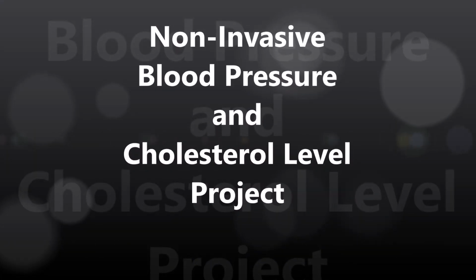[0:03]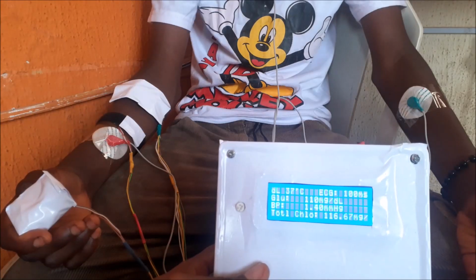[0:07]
Hello there, welcome to another episode where we try to build a non-invasive blood pressure and cholesterol measurement using Arduino and Node MCU development boards. We will build this project.
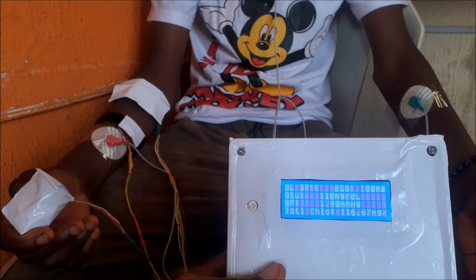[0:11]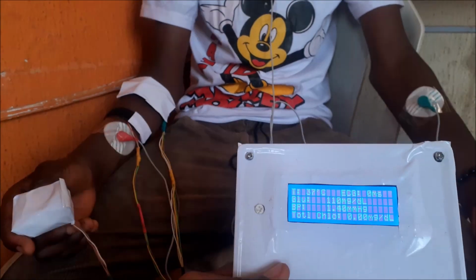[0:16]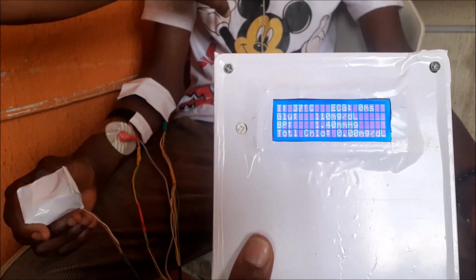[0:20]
This project monitors essential vitals like glucose level, blood pressure level, body temperature, ECG levels, pulse rate and cholesterol levels in the body. All of these are displayed on a smart screen like the 20x4 LCD screen shown here.
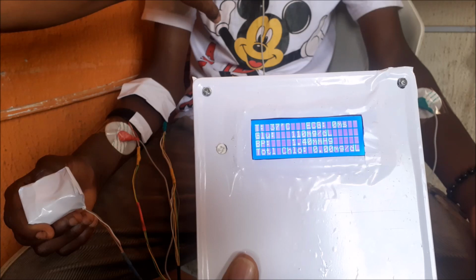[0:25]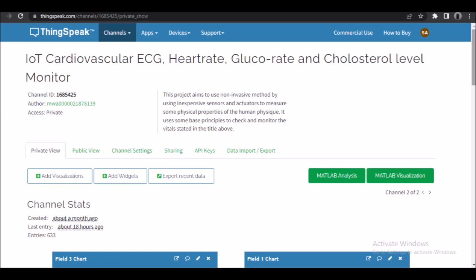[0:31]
We will also be making the project Internet of Things based, where we will not only be able to see it on a dashboard but we can further analyze it and have a health professional remotely monitor and predict the health outcome of the patient. This remote IoT dashboard will be the ThingSpeak IoT dashboard.
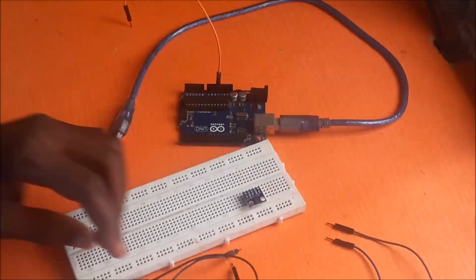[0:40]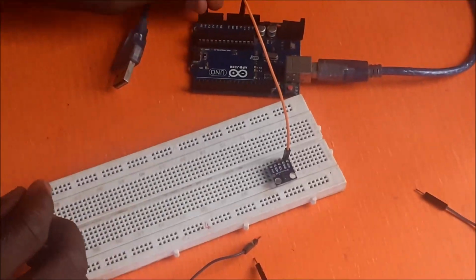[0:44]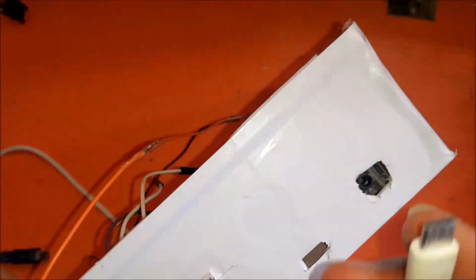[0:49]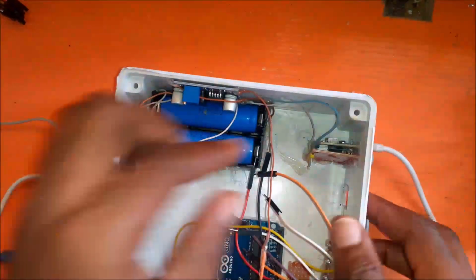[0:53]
In this tutorial we will go from the circuit diagram to how we breadboarded the components, down to assembling the components themselves, to programming it, as well as testing it to ensure it is working as we need it to be. So without further ado, let us get into how this was made.
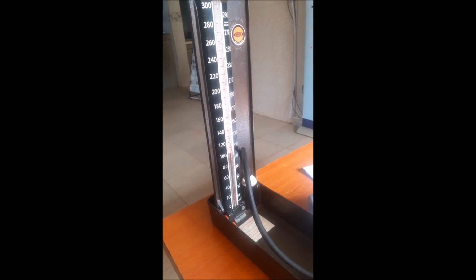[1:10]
Before we begin this design, we will take a route down the traditional way of doing this. We go to the lab to get the specimen's results on these parameters. The blood work of this person would reveal the person's cholesterol level, the glucose level, the blood pressure, the pulse rate and body temperature, as well as the other things we needed in the project design.
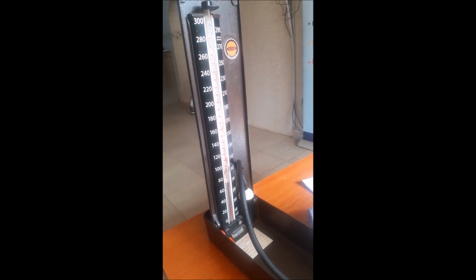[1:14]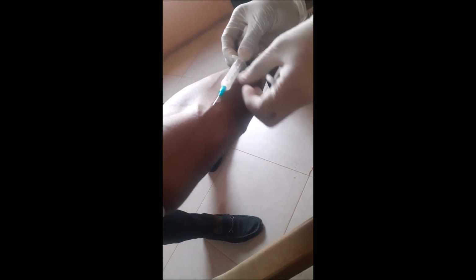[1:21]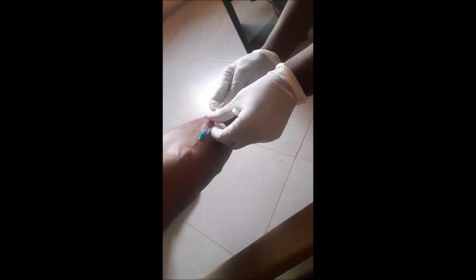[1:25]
This traditional method, which is the invasive method, involves pricking the skin with needles and drawing blood samples. On these samples, various tests will be carried out and we can get the results, and we can use these results to compare with our non-invasive approach.
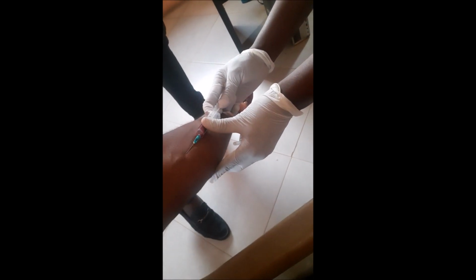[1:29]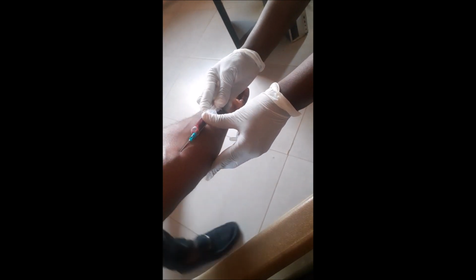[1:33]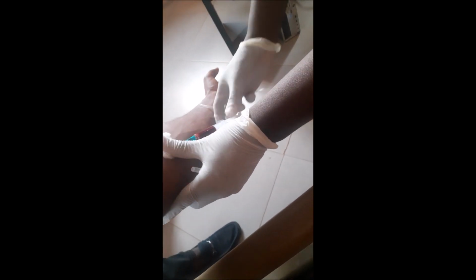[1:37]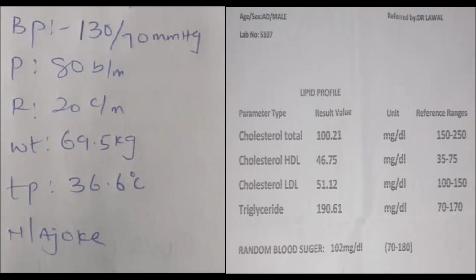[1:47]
The lab work will take some hours for the results to be out, but we will wait until they eventually come out. The process is a bit painful if you are not scared of needles, but it is frightening if you are. Hence why we are experimenting to find a better way, a non-invasive approach to cardiovascular disease detection and prevention. Once we get our results, as written here on this piece of paper, we move on to designing the schematic diagram for the non-invasive technique.
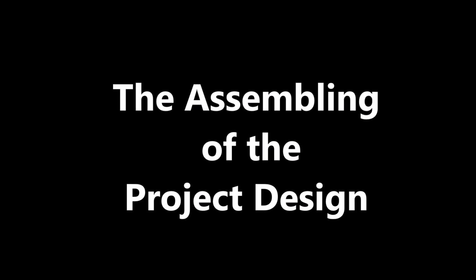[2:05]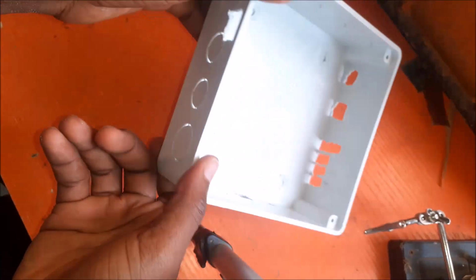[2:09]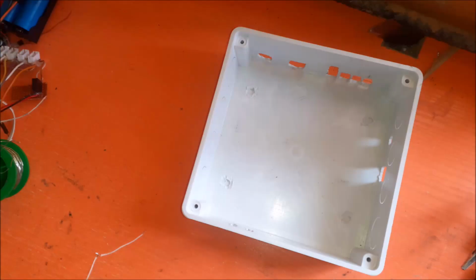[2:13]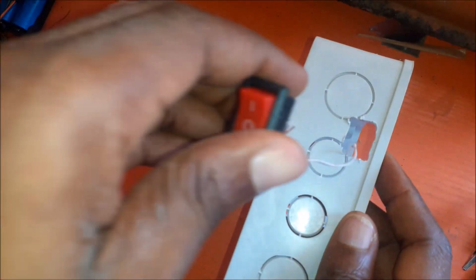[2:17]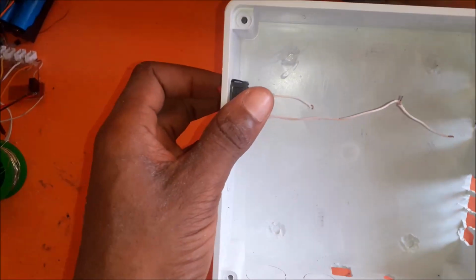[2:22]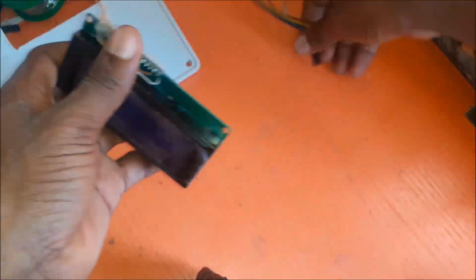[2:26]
Now, let us proceed to assembling the project design according to the circuit diagram. First, we begin with the enclosure and how to mount the components and the modules in it accordingly. Already we have made openings to safely situate these modules in the enclosure. We begin with including the switch for isolating and introducing power to the rest of the components from the backup battery. After this, we mounted the LCD screen carefully under the top cover of the enclosure.
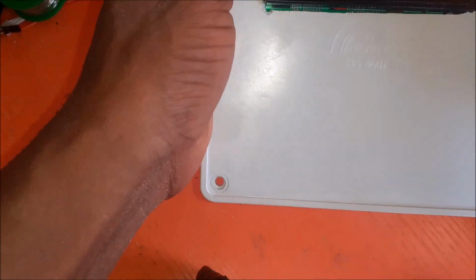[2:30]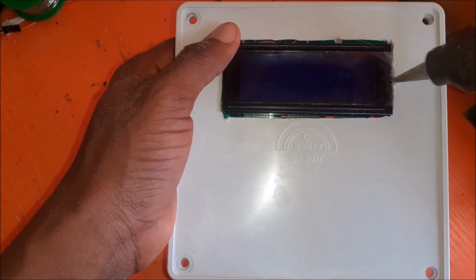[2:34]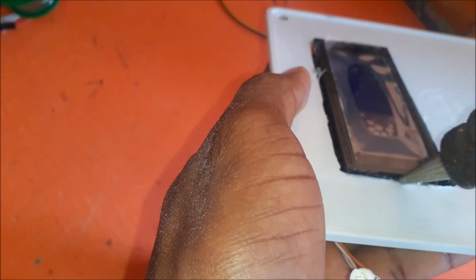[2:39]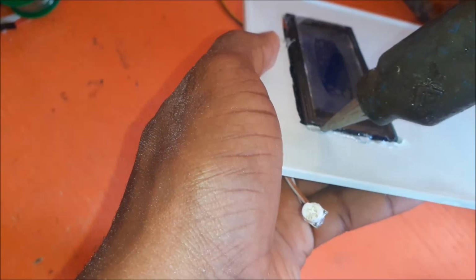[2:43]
Then we used the glue gun to apply some glue on the screen to hold it tightly in place to the enclosure cover. Once this was neatly done, we can proceed to the next thing on our to-do list.
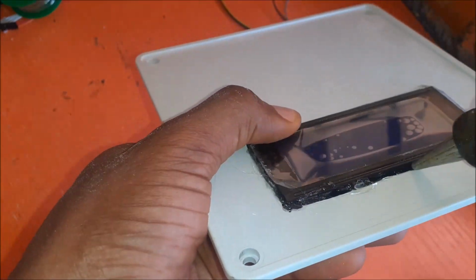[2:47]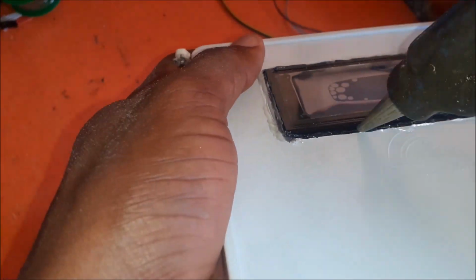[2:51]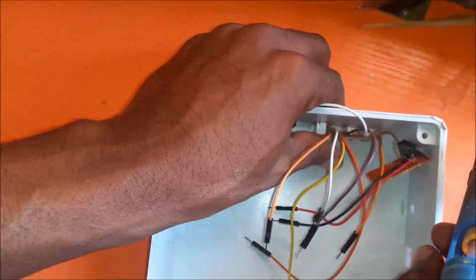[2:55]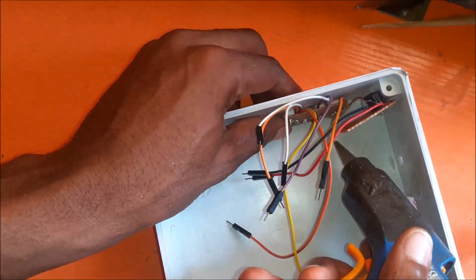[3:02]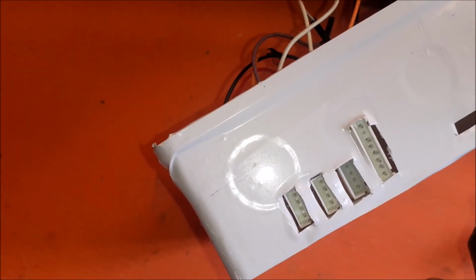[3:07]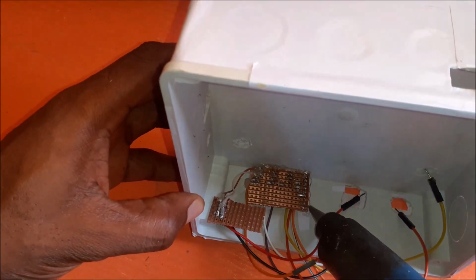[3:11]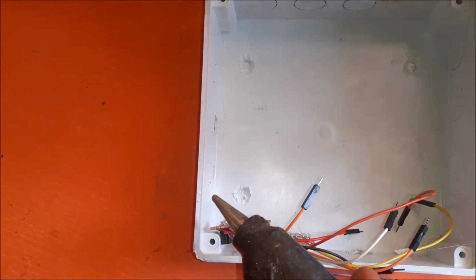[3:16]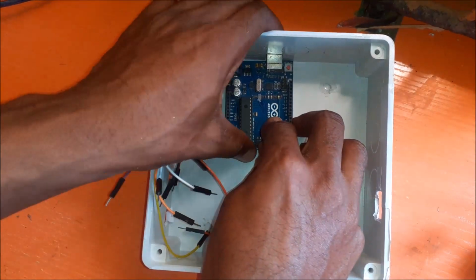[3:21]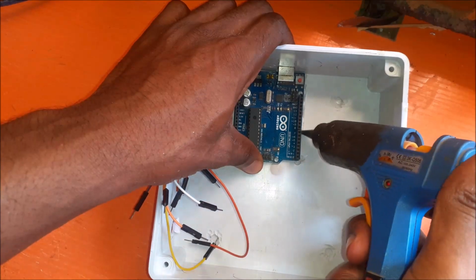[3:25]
The next thing would be to glue the connectors that we will use to connect the sensors to the development board. Since the schematic diagram specified that we used an Arduino Uno board and a Node MCU development board, these 2mm JST male connectors will house the female wire connector when we connect the sensors from outside the project enclosure design. And since these male connectors are soldered onto a Veroboard, we in turn solder a male jumper wire to it, so as to enable us to connect it to the Arduino development board itself. The whole process is for ease and convenience of the wiring and connection as specified by the circuit diagram.
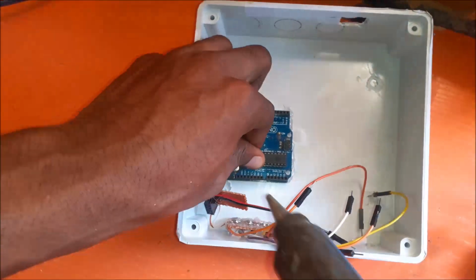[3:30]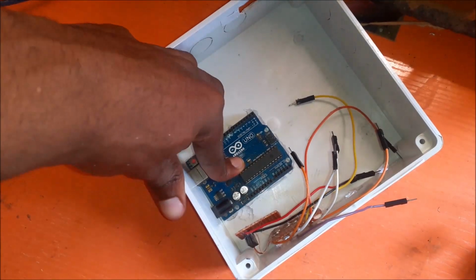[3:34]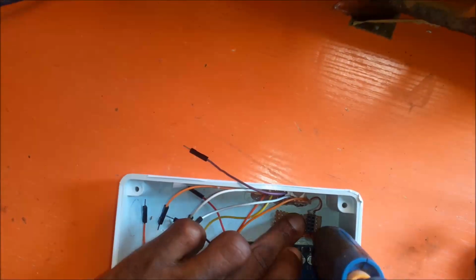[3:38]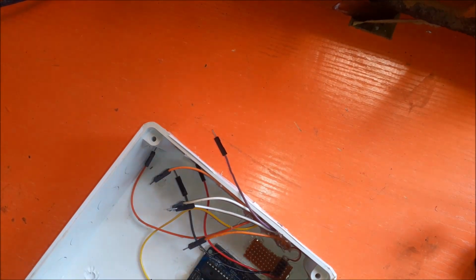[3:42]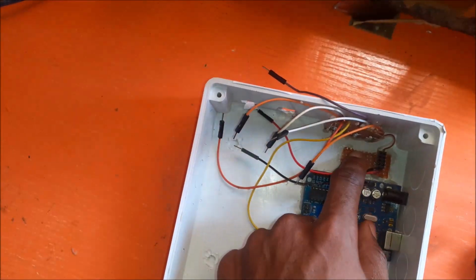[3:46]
Now, we also glued the Arduino Uno board onto the base of the enclosure, but we also cut out an opening for programming the board itself. We have broken the circuit diagram itself into different parts so as to make it very easy to connect them following the circuit diagram. Also, to make it easy to troubleshoot the design for any hardware errors or misbehavior when programming or testing it,
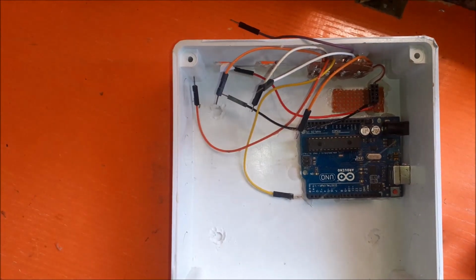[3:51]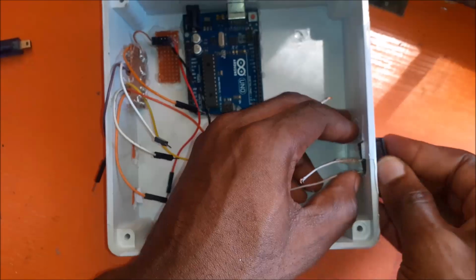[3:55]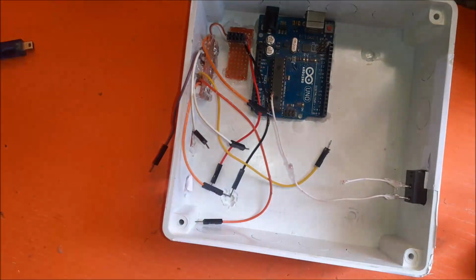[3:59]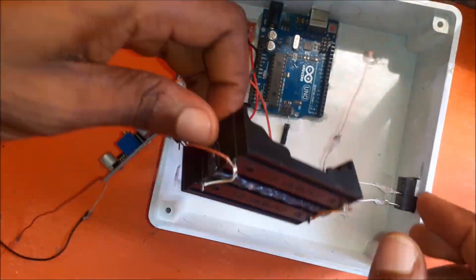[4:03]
we used a pair of lithium-ion rechargeable batteries which are rated 3.7 volts, 3.8 Ah, to power this project. They also act as a backup power source when the design is not powered directly from an external power source. These LiPo battery holders will house the LiPo batteries themselves.
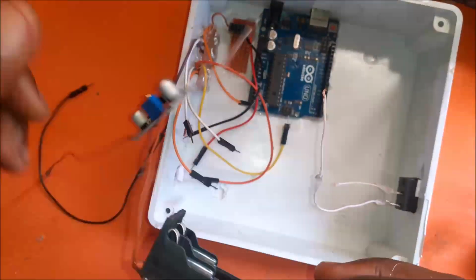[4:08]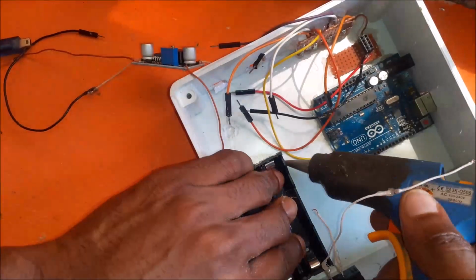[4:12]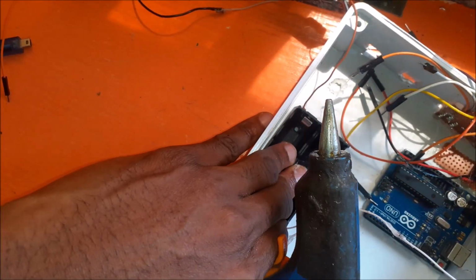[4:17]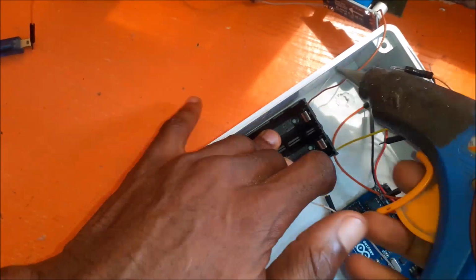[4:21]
Carefully apply glue to the battery holder base to firmly hold it to the base of the enclosure. Then proceed to glue it further to ensure it is strong and doesn't move when it is vibrated by mistake or intentionally. Once you are done with this, you can let the hot glue cool off and form a firm bond to ensure it is strong and firm.
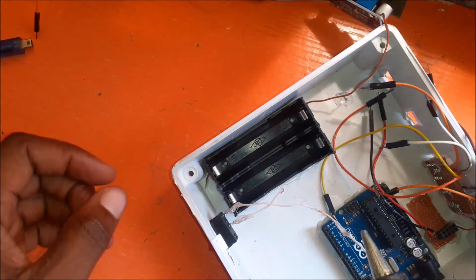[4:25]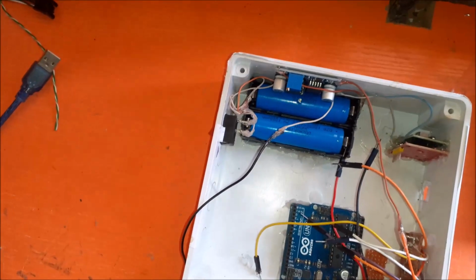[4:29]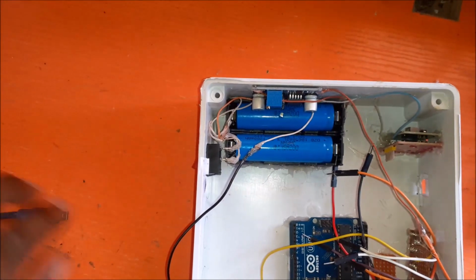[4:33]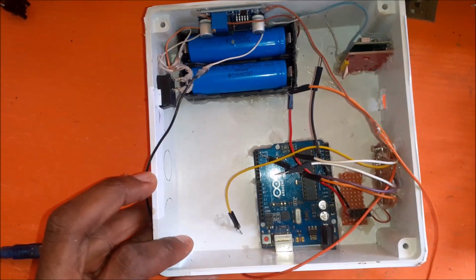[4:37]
Since the Arduino Uno board and the NodeMCU board need 5 volts to work, we connected the LiPo batteries in series and used a DC-DC buck converter to step the output voltage down to 5 volts, so that it will be at a suitable voltage level for the development boards.
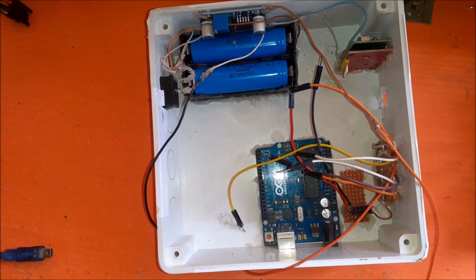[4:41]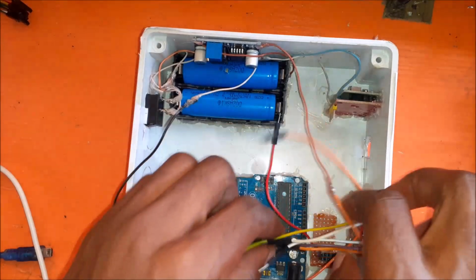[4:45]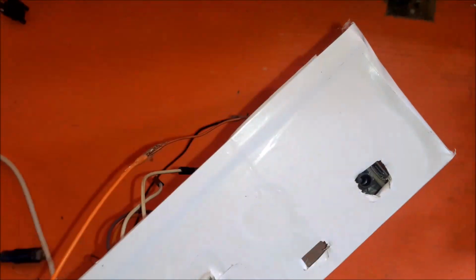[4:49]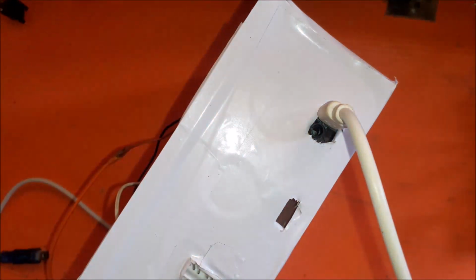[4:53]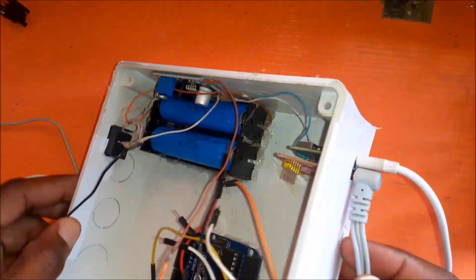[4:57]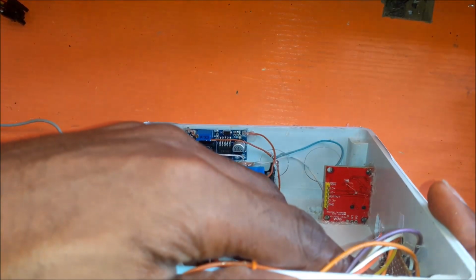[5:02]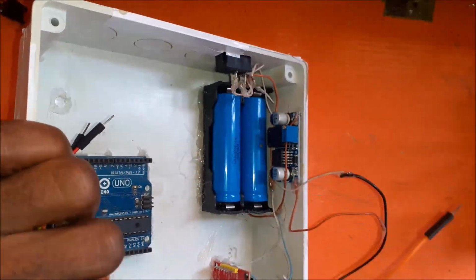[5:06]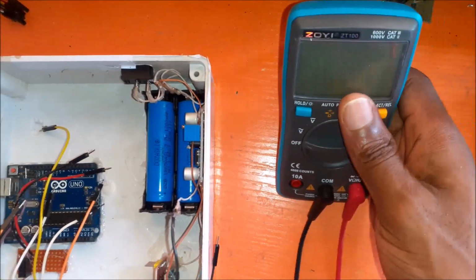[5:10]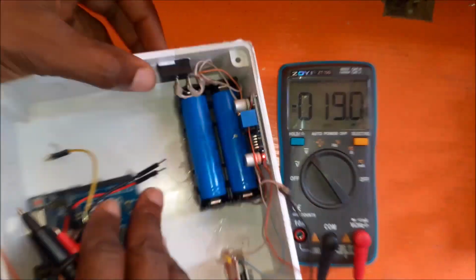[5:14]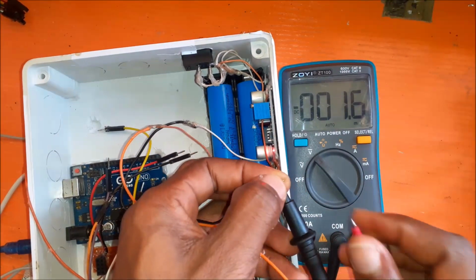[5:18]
Now we can proceed to regulate the output voltage for the modules and components connected in the design. Using a digital multimeter set to voltage measurement, we can turn the knob of the onboard buck converter until it outputs 5 volts DC. This 5 volts would then be paralleled across all the modules that are connected in the circuit diagram.
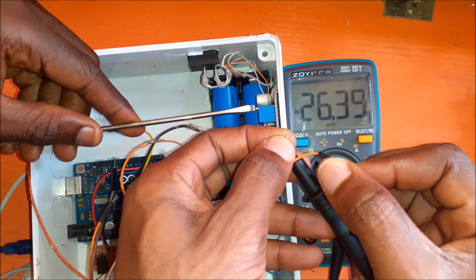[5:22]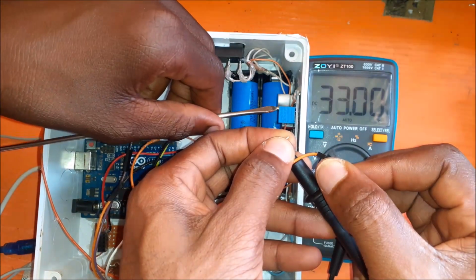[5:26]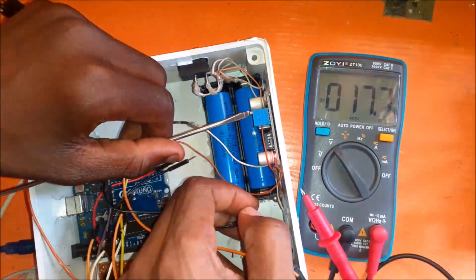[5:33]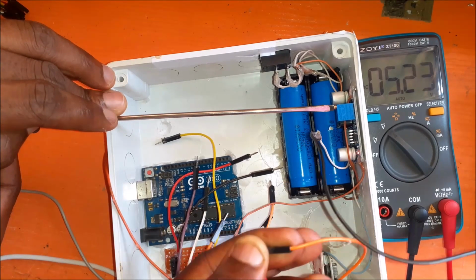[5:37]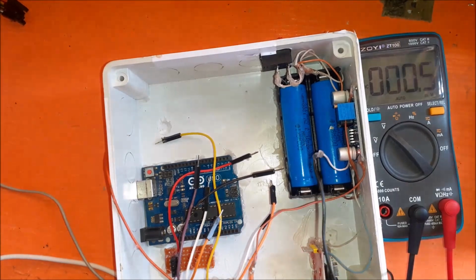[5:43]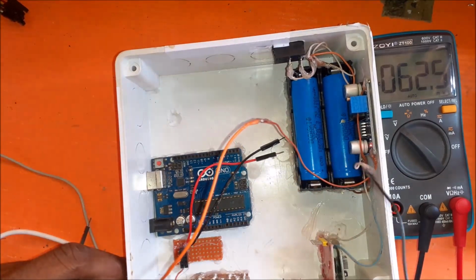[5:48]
Since this is the logic level all of them are using, except for the ECG sensor module whose comparator board uses a logic voltage of 3.3 volts. We can source the 3.3 volts level from the Arduino Uno board, since it has an onboard regulator that can give us this output. We made a multiple output channel for this 5 volts logic using female header pins soldered onto the Vero board, where the modules and development board can be connected to get the 5 volts logic levels.
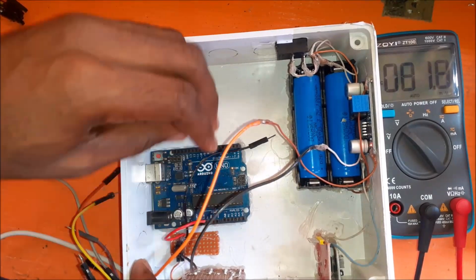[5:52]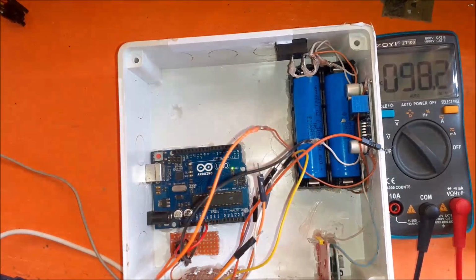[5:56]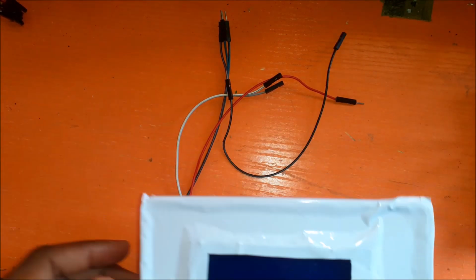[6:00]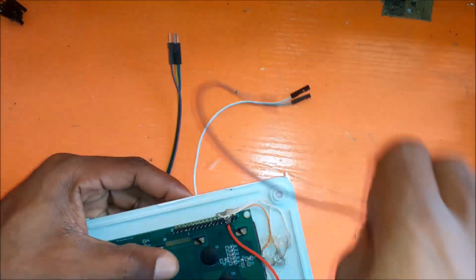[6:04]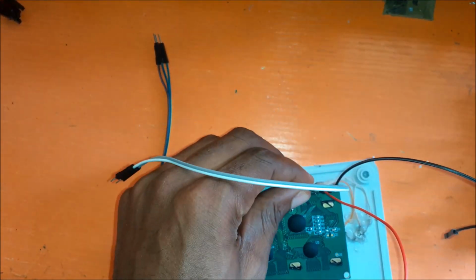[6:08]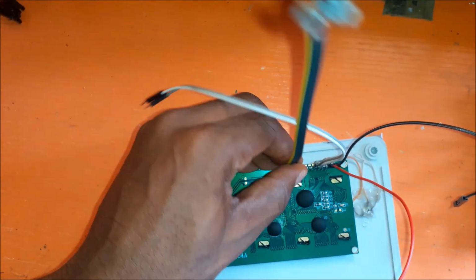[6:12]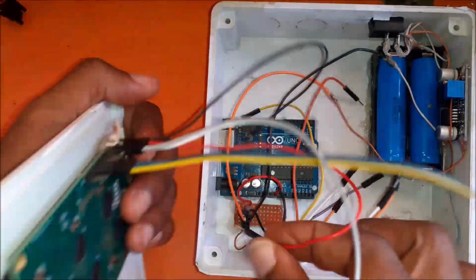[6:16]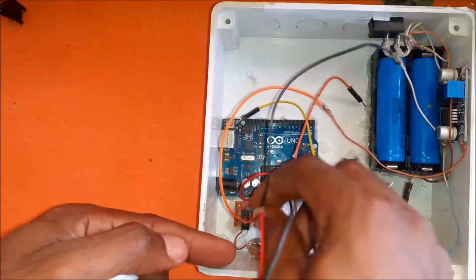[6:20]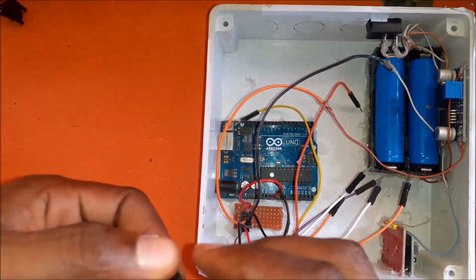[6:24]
Next we move to the connection of the LCD module. Since we are using a 4-bit method, we connected the LCD according to the schematic diagram. This means connecting the module to the Arduino Uno using male jumper wires. We connected the power rails first, then the register select wire and the enable pin wire to the Uno board, then the 4 data wires from the Uno board to the LCD module.
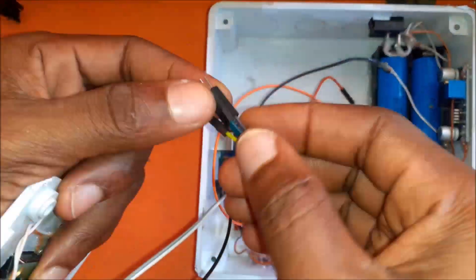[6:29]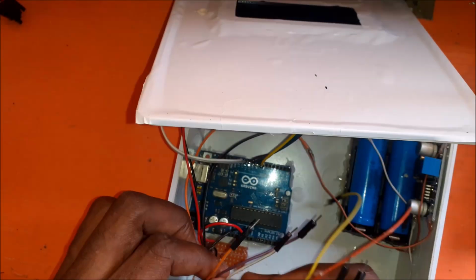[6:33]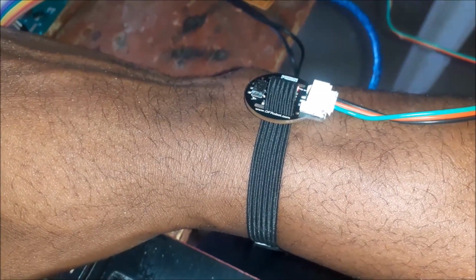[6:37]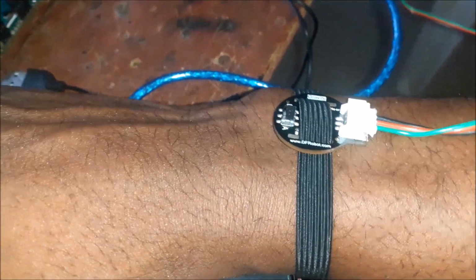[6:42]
Once we are done with the LCD connection, we move to connecting the other modules and ensure all the wiring is done accordingly, like ensuring that this pulse sensor module shown here is properly connected and is also working. Enough about component assembly, let us move to programming the project design.
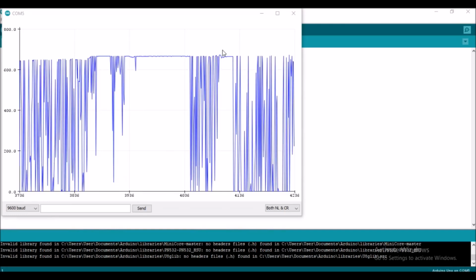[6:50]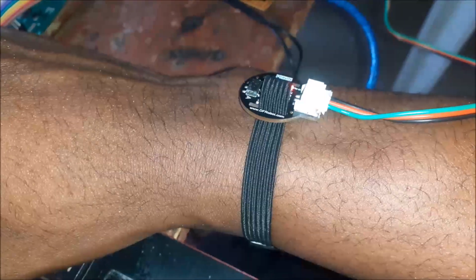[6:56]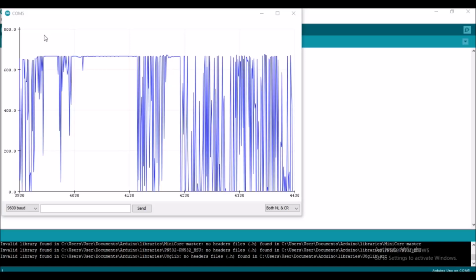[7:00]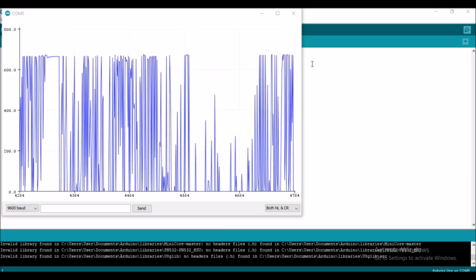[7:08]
Download a copy of the project Arduino source code from the description link below. Once you run the code, your serial plotter would be able to show you the ECG readings just as the one shown here. Also, when testing the pulse sensor and you open the serial plotter on the Arduino IDE, you can see the measurement taken as it is being plotted. Now we can really see what the pulse sensor is giving us graphically.
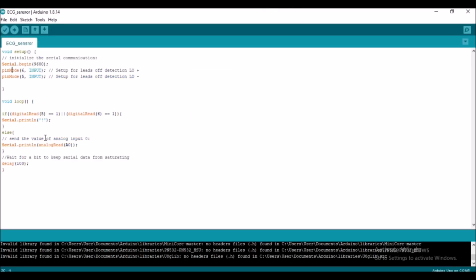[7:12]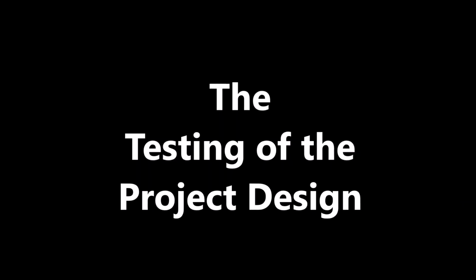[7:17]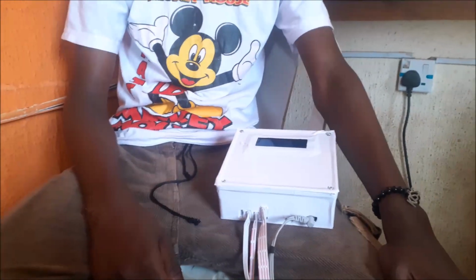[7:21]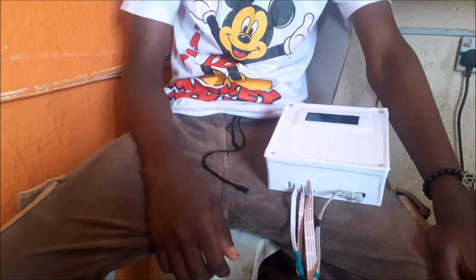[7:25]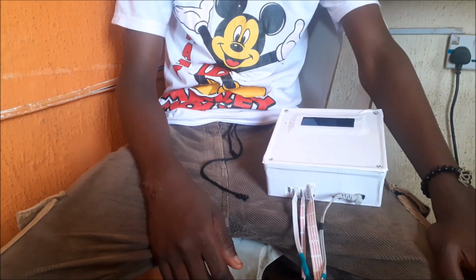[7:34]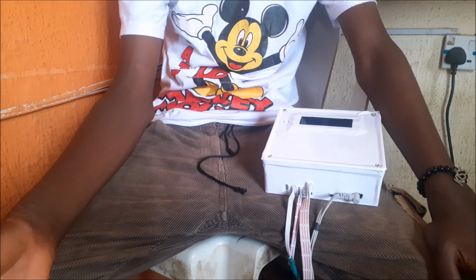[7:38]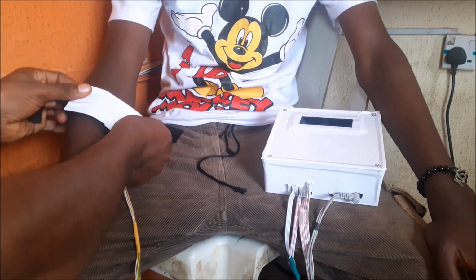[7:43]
Once we are done running the various codes needed for the vascular disease detection and prevention project design, we can proceed to actually testing out the project design to see if it confirms the results obtained from the laboratory blood work. We picked the same person that was used to obtain the lab results. This was very essential during the testing phase of the project itself. We connected all the sensors needed for the test to their respective ports. Once this is done, we are ready to carry out our non-invasive tests.
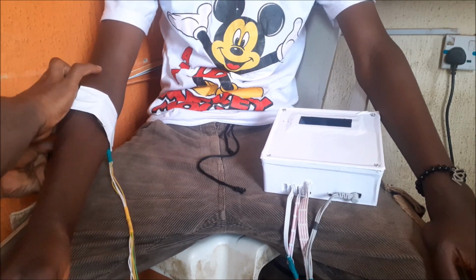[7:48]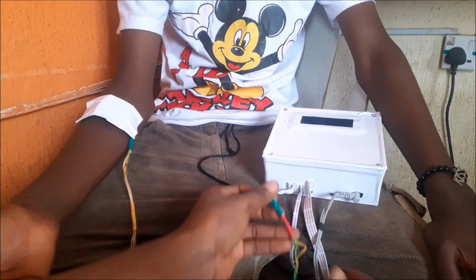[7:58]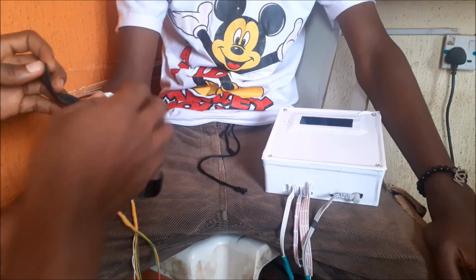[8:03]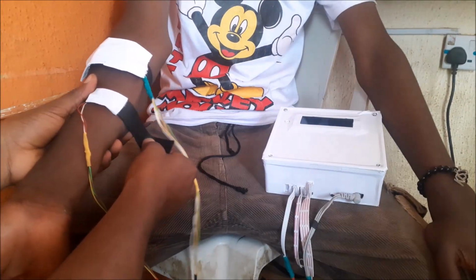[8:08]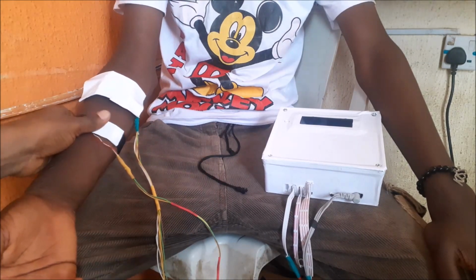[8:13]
Some of the sensors were custom made according to the schematic diagram, and we attached them to a Velcro fastener to ensure we measure as closely as possible the reading we are looking for. Starting with the pulse sensor module, we attached it to the arm. The temperature sensor used to measure the body temperature was attached next. We were going for a waterproof temperature sensor using the Dallas DS18B20 sensor. We found out that the ordinary type works better as well.
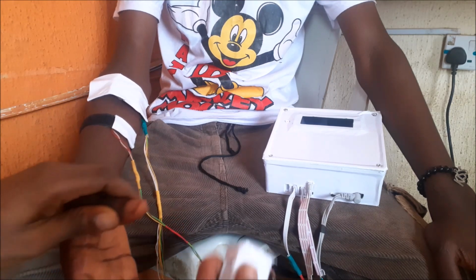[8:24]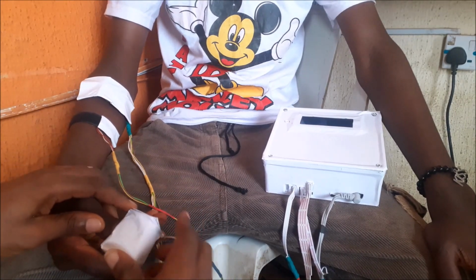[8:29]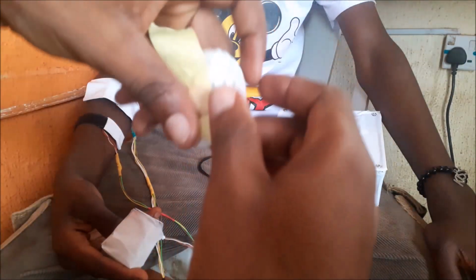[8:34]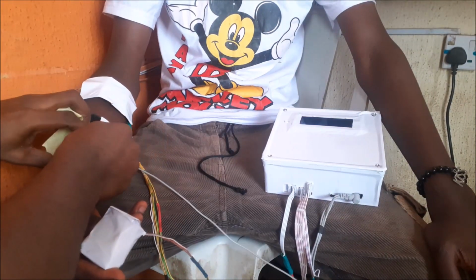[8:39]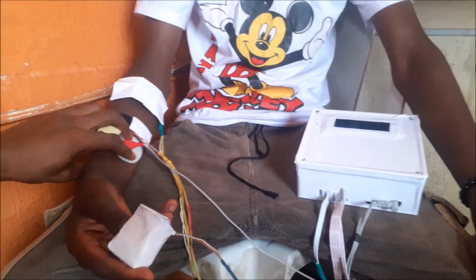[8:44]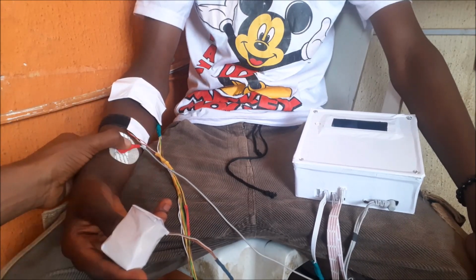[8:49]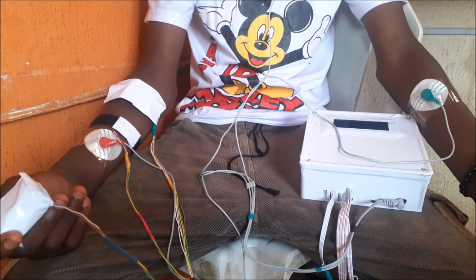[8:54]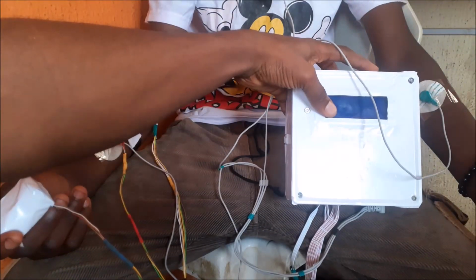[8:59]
The cholesterol sensor module, which was custom made using the Beer-Lambert principle, was attached to the thumb and ensured it was firm and strong. Next is the ECG sensor. This has 3 sensor leads, and we place them accordingly in the positions on the body. These positions are to ensure accuracy of the sensor itself. Once these body sensor attachments were completed, we can proceed to powering on the device itself.
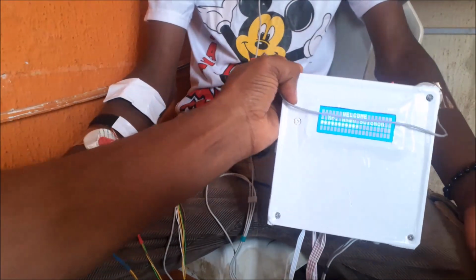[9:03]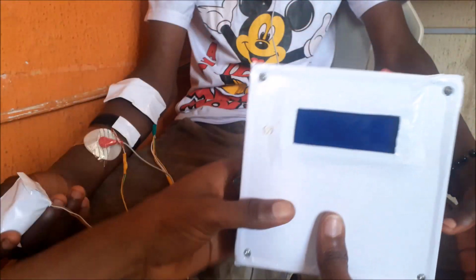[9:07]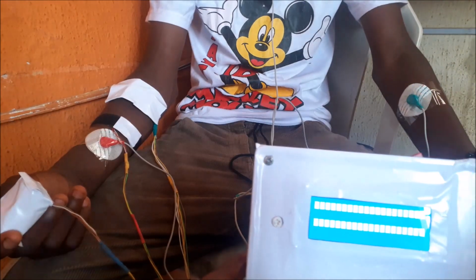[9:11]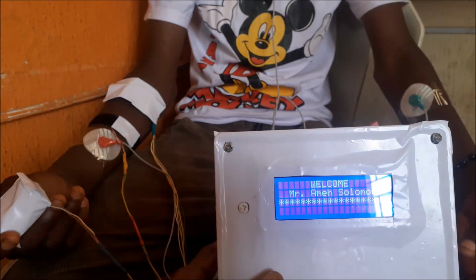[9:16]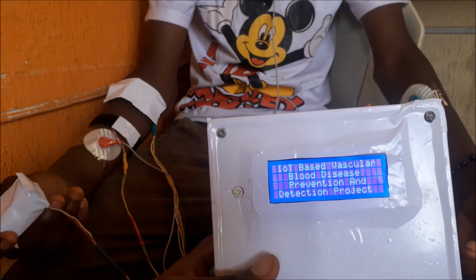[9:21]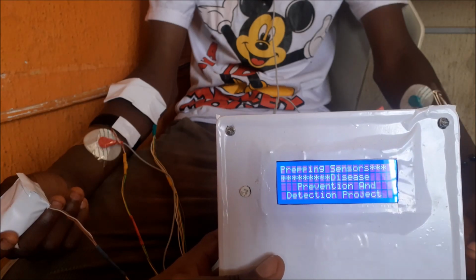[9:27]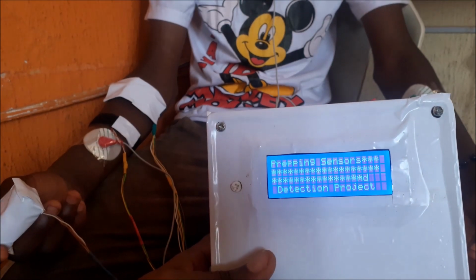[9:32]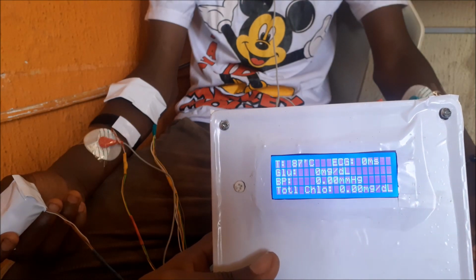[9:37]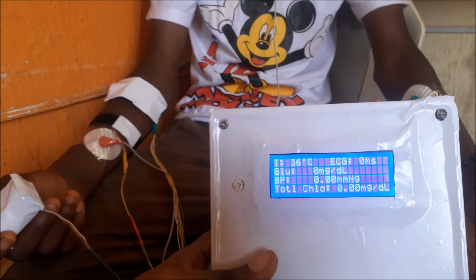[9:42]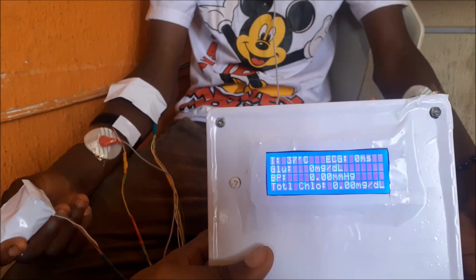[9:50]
On turning on the device, we are greeted with a welcome message, after which the screen clears and some time is taken for the microcontroller to ready the sensors. Once the sensors are ready, we can begin taking measurements, and we can see each sensor reading on the LCD screen. Each line has what it is measuring, and it is clearly stated there.
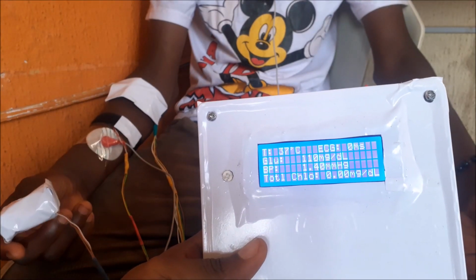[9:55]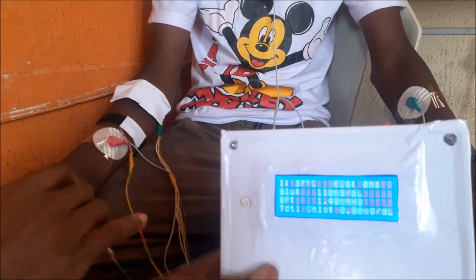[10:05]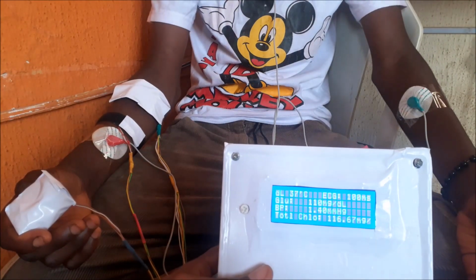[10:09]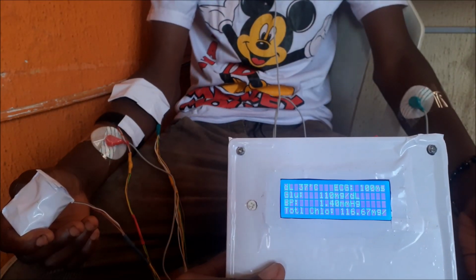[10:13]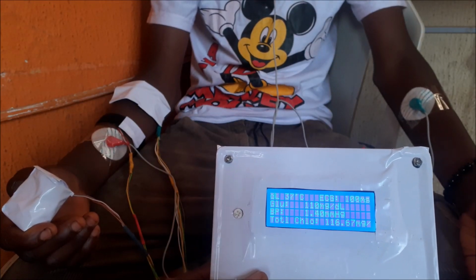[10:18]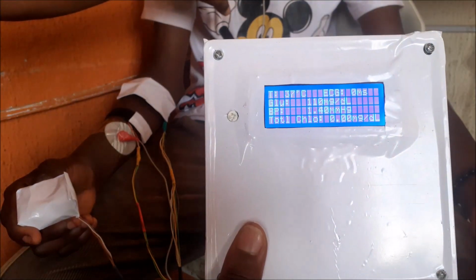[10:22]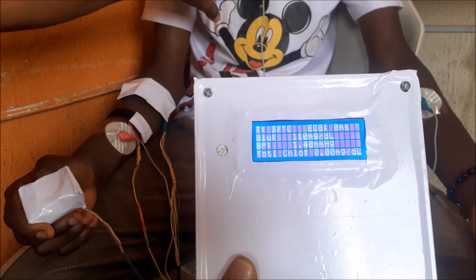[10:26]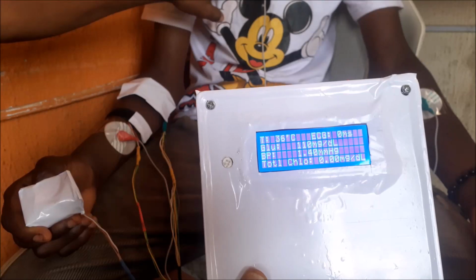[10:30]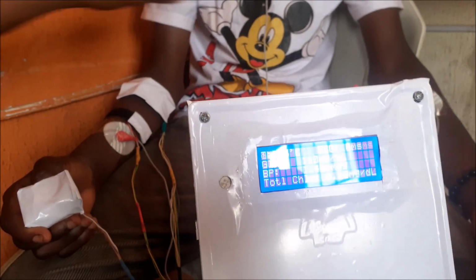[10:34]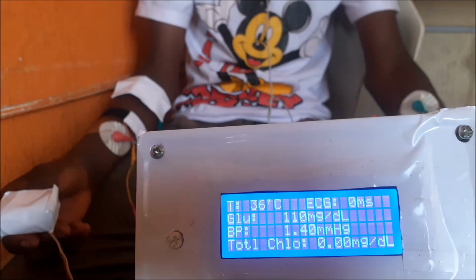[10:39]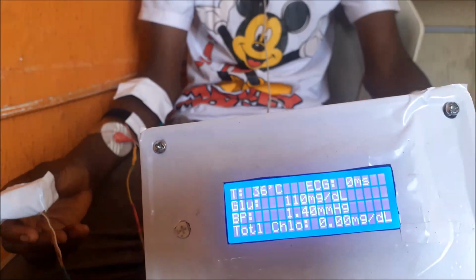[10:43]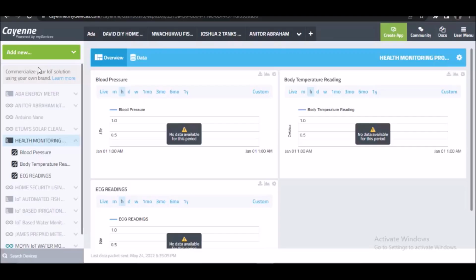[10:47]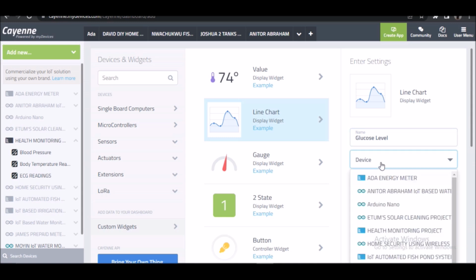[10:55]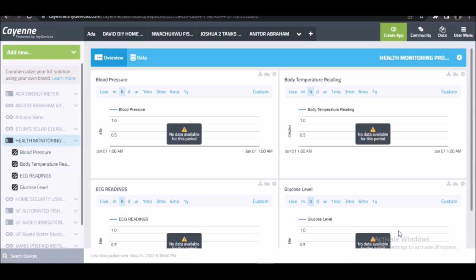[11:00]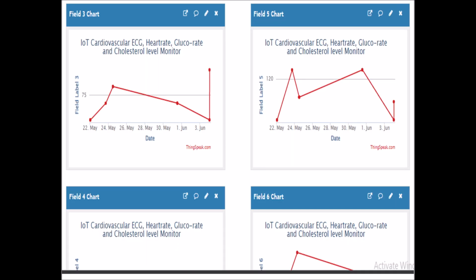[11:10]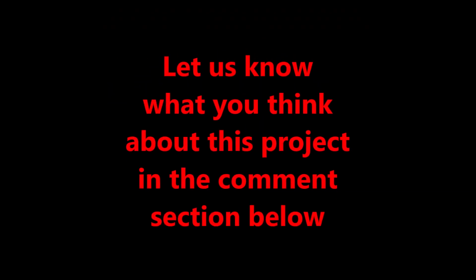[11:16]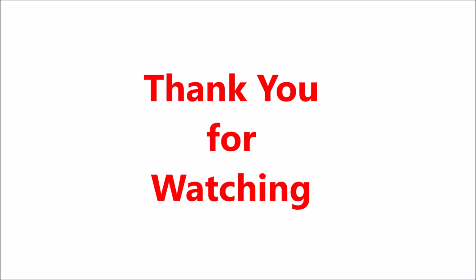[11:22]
Now it is time for us to send this measured data to an IoT dashboard. At first, we tried using the Cayenne IoT dashboard, but after setting it up, we found some inconsistencies and moved to the ThingSpeak web server. ThingSpeak provided us with the right avenue to quickly set up IoT monitoring and remote analysis of the cardiovascular readings measured by the sensors, and that is it. We have successfully designed and constructed an IoT-based cardiovascular detection system.